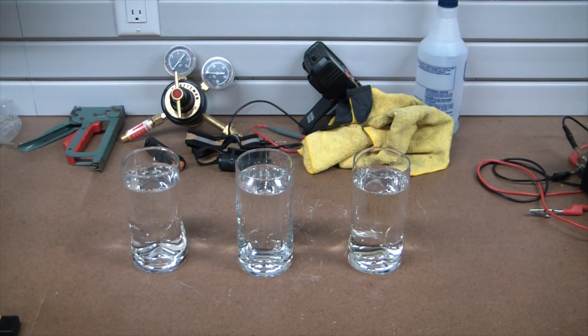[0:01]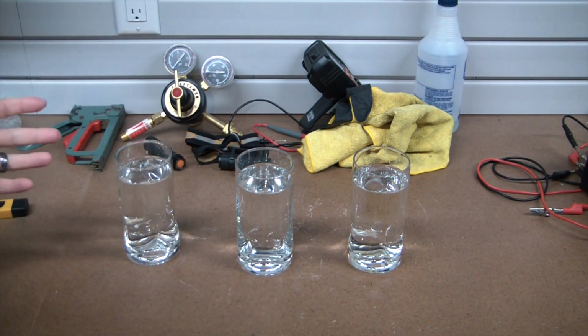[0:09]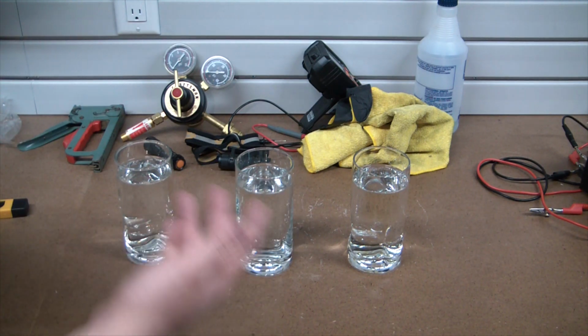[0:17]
Today, I have got water. So, I wanted to get into basically how water is treated for laboratory use, and also what I'm going to do here in my personal workshop and new house.
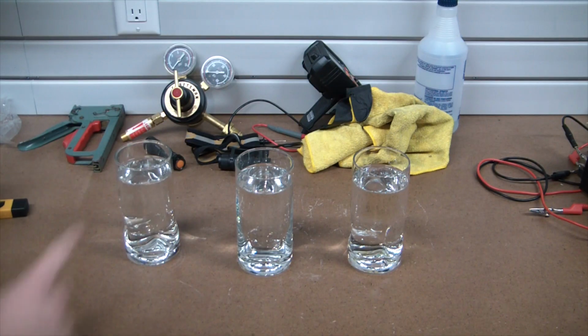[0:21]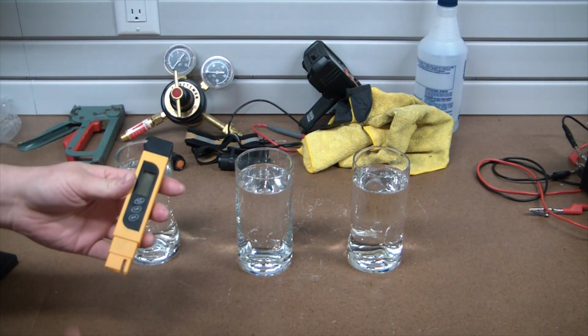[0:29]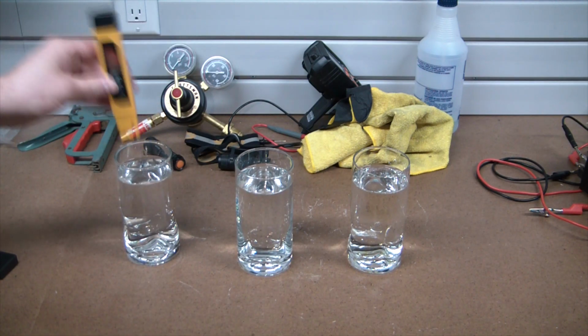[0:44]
So, what I have here is tap water right out of our tap, and this is a cheap little TDS meter off Amazon. Literally, it's an ohm meter, so it measures the resistance of water. If we look at this, it says 0 ppm. Put it in the water: 421, which is still below the EPA's recommended threshold. I think it's around 500. Below 500 is considered safe to drink.
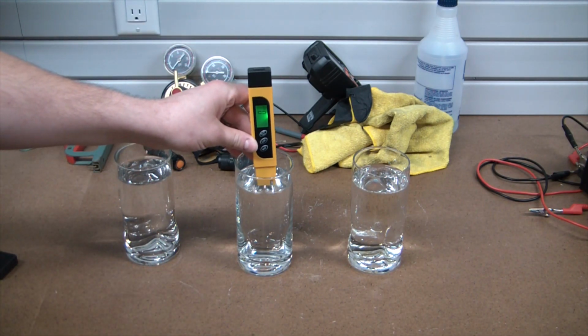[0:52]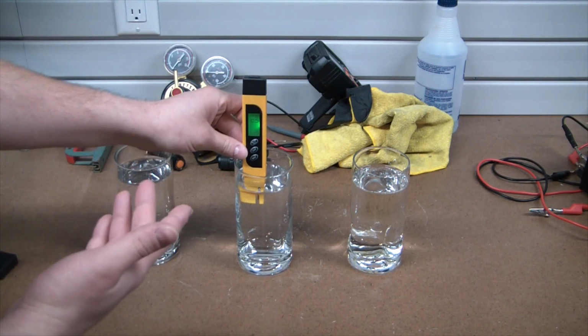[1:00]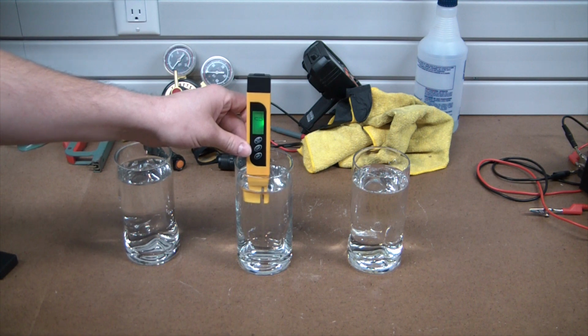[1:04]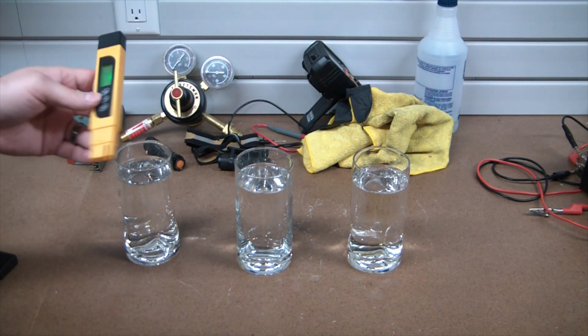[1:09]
Now here, I have distilled water. Should be pretty close to zero, if not zero. Yeah, that's not even picking up. So, I mean, this TDS meter, take it with a grain of salt. I'm sure there is some TDS in there, because even off the shelf, distilled water isn't going to be completely pure.
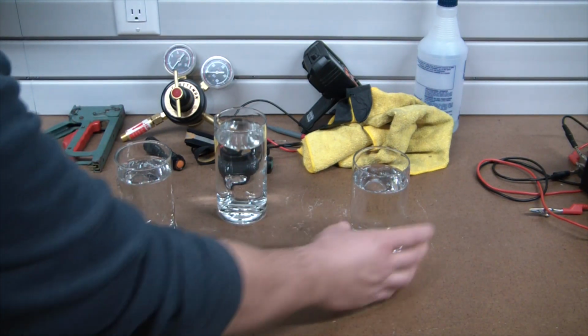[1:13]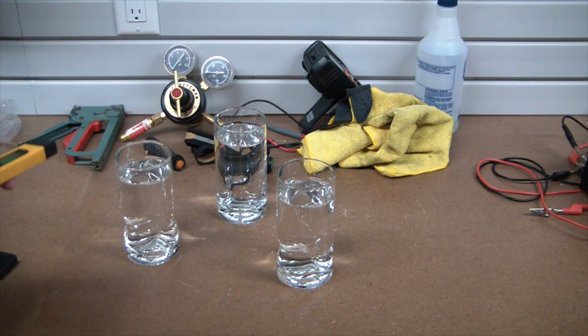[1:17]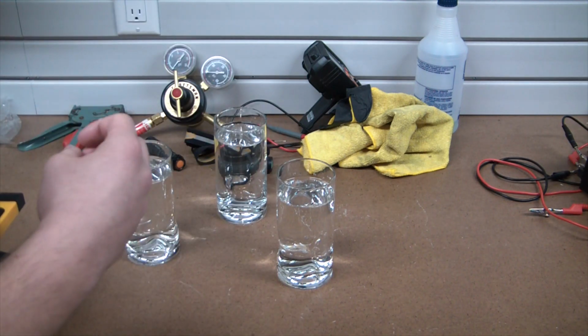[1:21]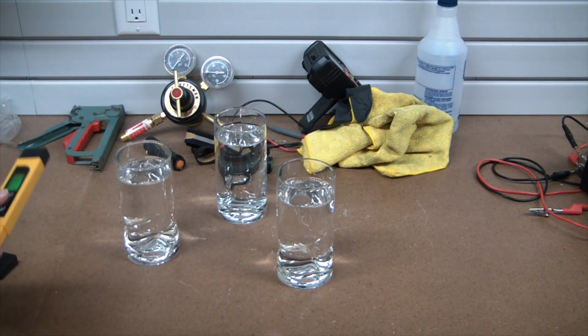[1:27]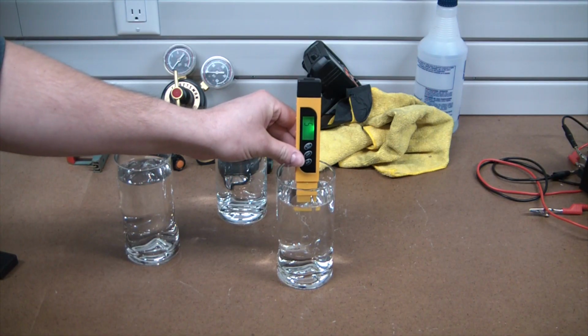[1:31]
And now here is what's called reverse osmosis water. It uses literally the reverse of osmosis. It uses water pressure to force water through a membrane, leaving the saltier liquid behind, which it then rejects and just disposes of in the sewer. And this should be maybe 30 or so. Oh, 5. So, yeah, that's pretty damn good.
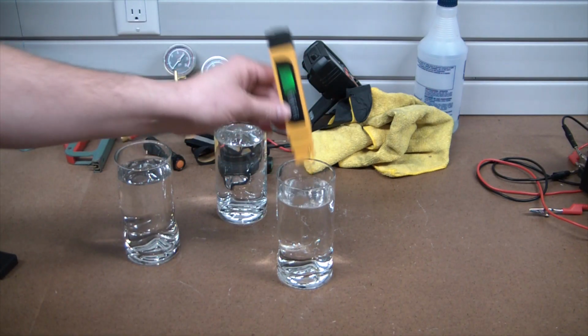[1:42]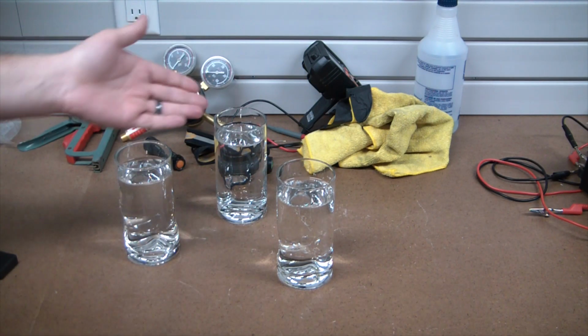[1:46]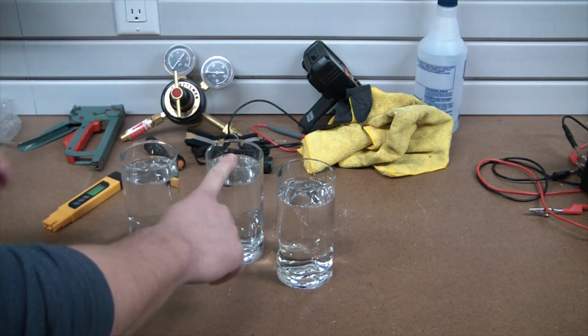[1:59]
Now, I don't yet have an RO system here in my house, but that's actually what I'm going to be putting in. From the RO system, I'm then going to be doing deionization, which will bring it to a state of purity that's above that of typical distilled water. So our goal: take this water coming in at 420 TDS, or PPM, and bring it down to a state where it is essentially zero.
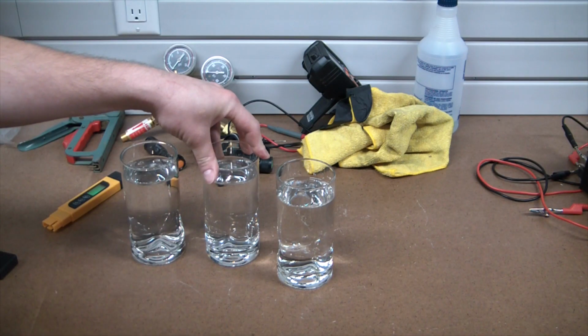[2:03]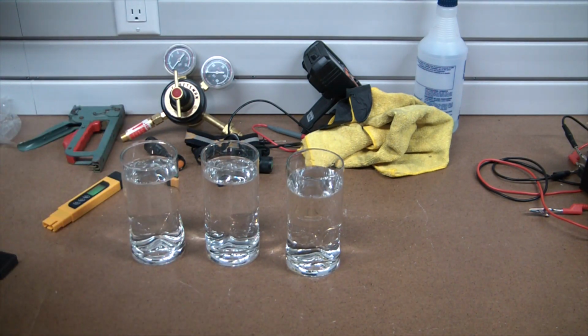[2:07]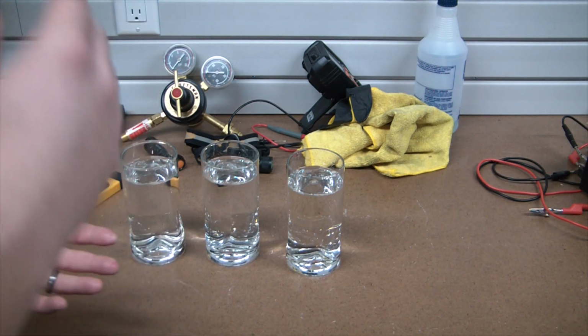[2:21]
Now, what I'm going to do is actually branch off the RO system. We're going to send some up to the kitchen for making coffee and tea and whatnot. That's going to be just straight reverse osmosis, so it might have between 10 and 30 parts per million. And then I'm going to put a branch off for use down here in the lab. That is going to be deionized.
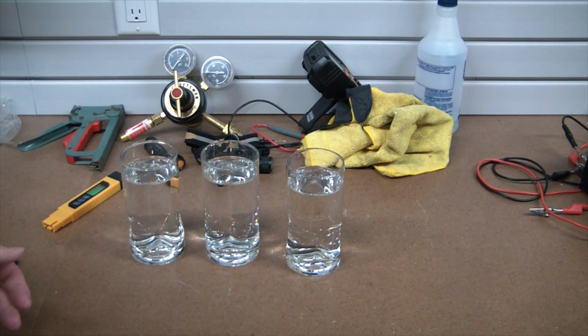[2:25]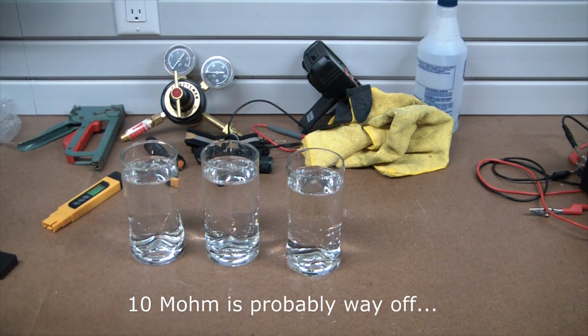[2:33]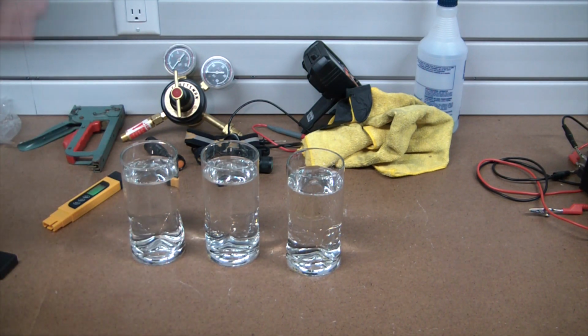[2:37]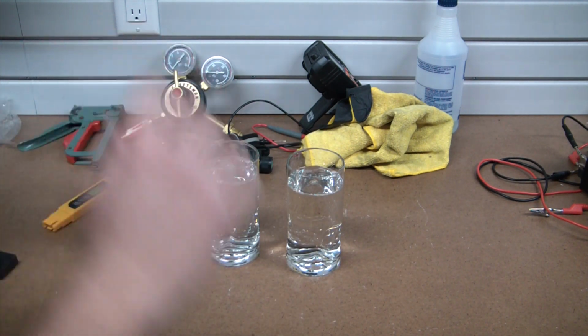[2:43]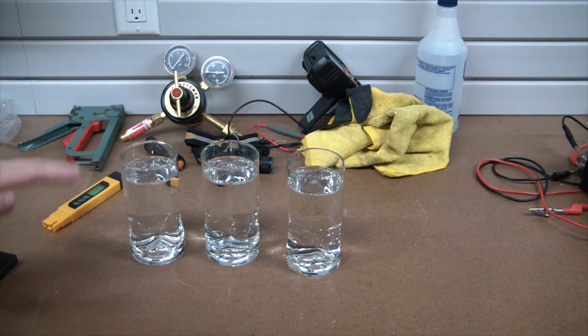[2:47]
It's going to run through an inline deionization filter with a nuclear grade resin that's going to take the water down to like, I don't know, 10 megohms or something. But it's going to be ultra pure, zero parts per million, zero TDS. You could literally spray it on your car, let the water evaporate, and you wouldn't get water spots because there are no minerals dissolved in the water at all. That's the goal here. Let me show you my current setup.
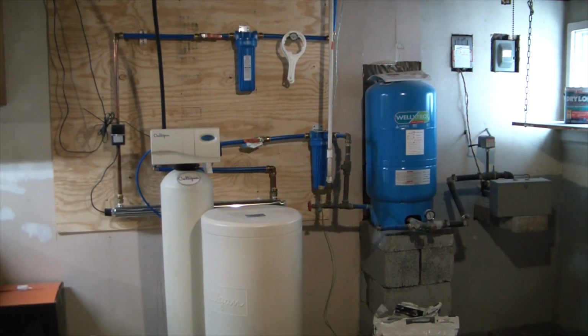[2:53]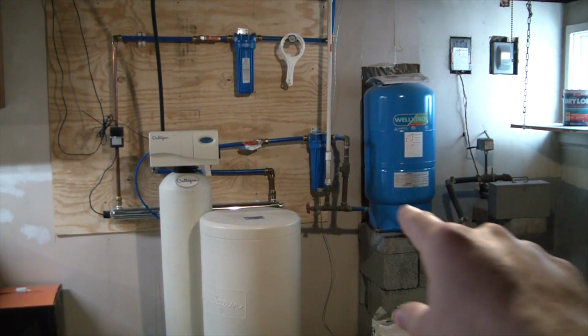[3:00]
All right, so this is my current water system, and this part here actually isn't going to change. I just want to show you what's going on. Over here, we have the well input, or I guess output. This is water coming from our well pump. We're not on city water, so no chlorine or anything to deal with. It's coming in from the well, 150 feet below ground. There's a little pressure switch there that clicks the pump on and off depending on the pressure.
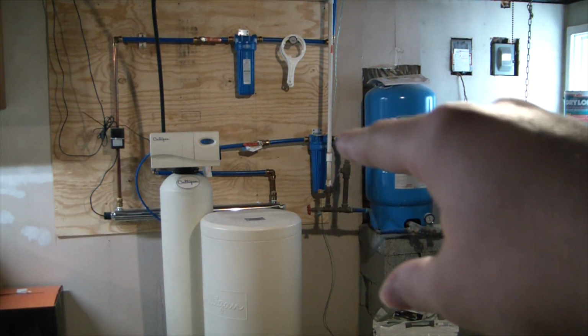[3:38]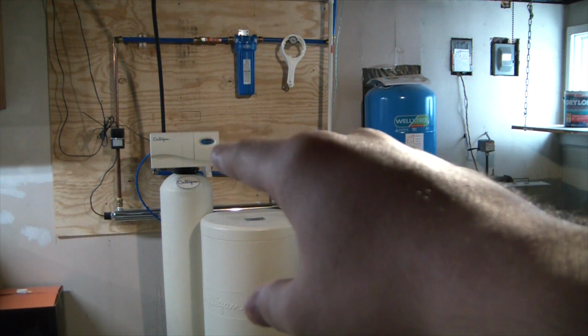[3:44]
There's our bladder tank. It's basically a pressurized membrane. It keeps the water pressure relatively equalized and allows the pump to work less because it can store water up here under pressure. Then it outputs to my first filter there, which is a 5 micron sediment filter. From the 5 micron filter it goes right to the softener.
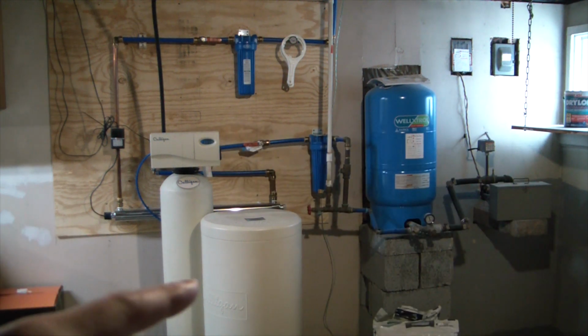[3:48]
The softener is actually an ion exchange resin that takes the dissolved calcium and magnesium minerals, along with some others, in the water and exchanges them with sodium. Over here is the actual resin tank, and there is a salt tank, a brine tank. Every so often it has to regenerate itself with sodium chloride, extracting brine from that tank and pumping it through, and then you're good to remove a bunch of calcium and magnesium again.
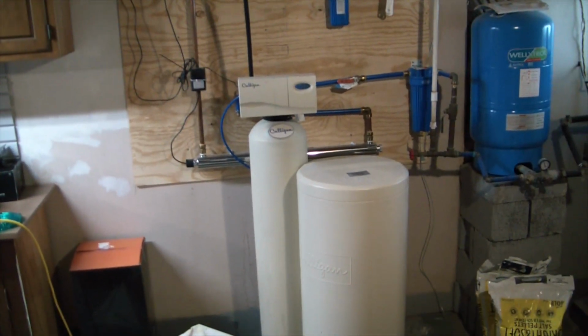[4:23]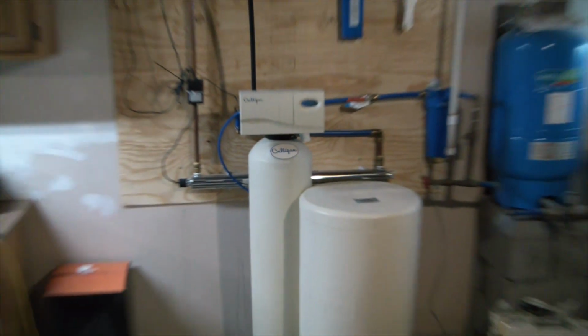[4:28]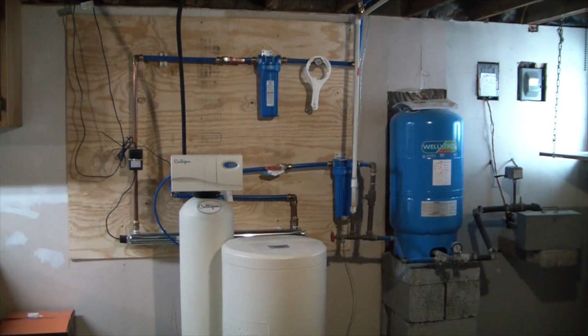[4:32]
From the softener, it goes to this big stainless steel apparatus that's tucked behind it there. It is a massive UV sterilizer, 55 watts of ultraviolet power. We did have the well tested originally, and it did have some kind of coliform bacteria in there. It's not E. coli, but some sort of coliform.
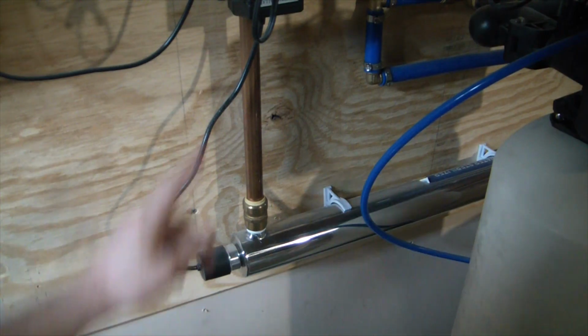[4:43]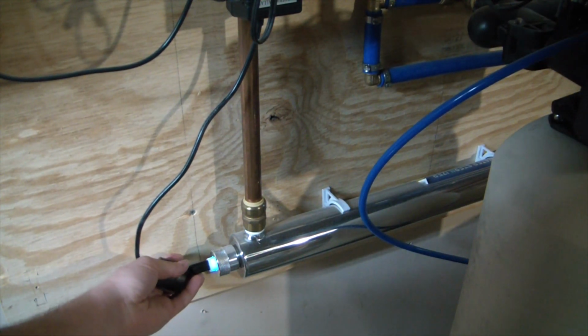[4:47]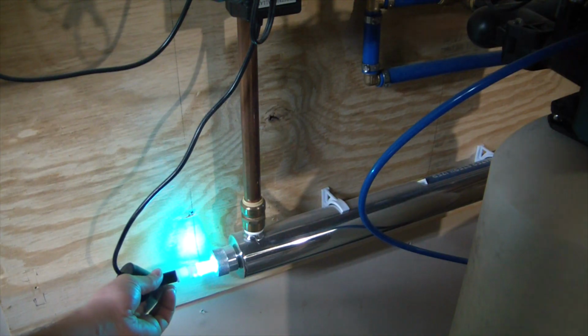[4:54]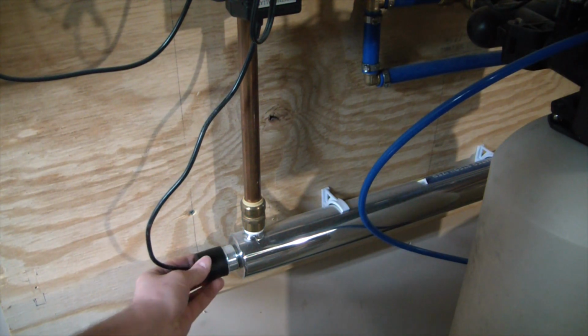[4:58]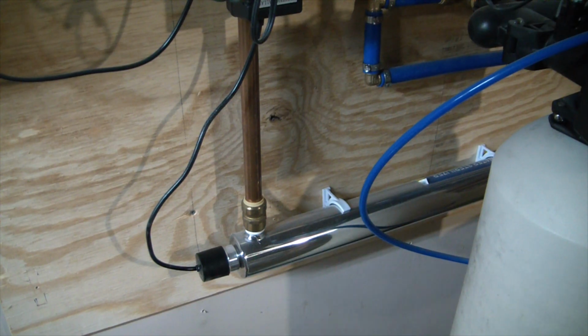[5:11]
So let me show you. Here's the end of the UV sterilizer. This is where the bulb actually goes in, so you can see. I'm not going to look directly at it, but the whole tube is filled with massive UV light. That destroys the DNA or RNA of bacteria, viruses, all that sort of stuff going through the sterilizer. I think it handles up to like 12 gallons per minute, so really high flow rate. Nothing can multiply after going through there if it does survive.
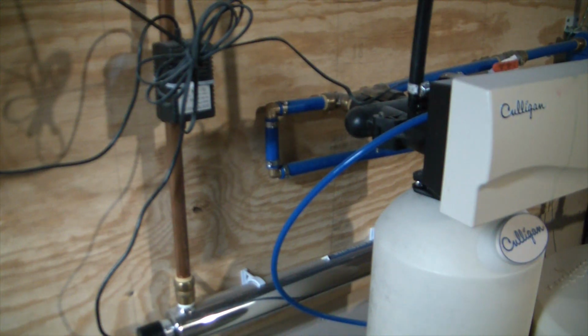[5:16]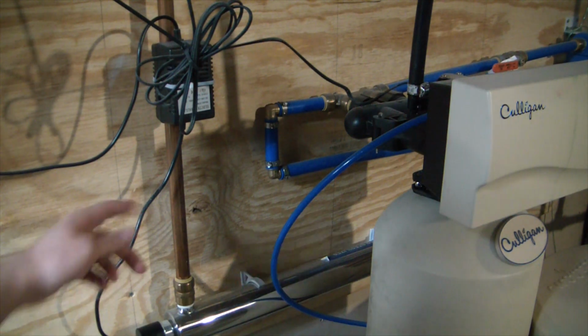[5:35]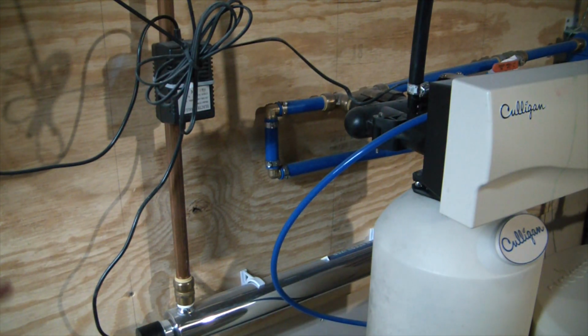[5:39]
Another important thing to note here, you can see most of my system is comprised of PEX. I love PEX. Super easy to work with. Get the crimps, SharkBites, whatever you want. Super, super easy. But you can see I did not use PEX for the connections to the UV sterilizer, and that's because that super intense ultraviolet light will destroy the inlet and outlet areas if it is plastic. So instead I use copper there. Copper isn't going to get hurt by huge intense UV radiation.
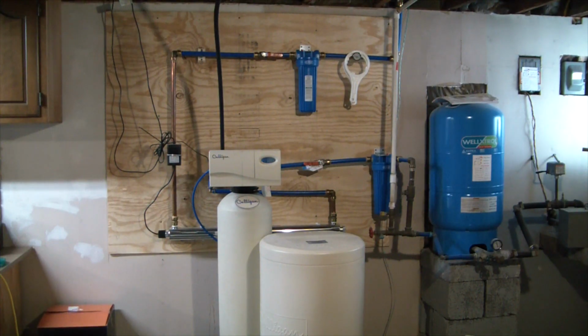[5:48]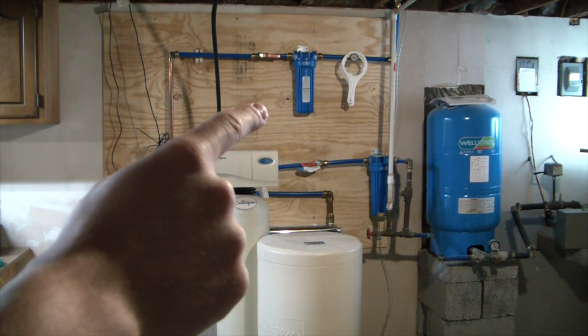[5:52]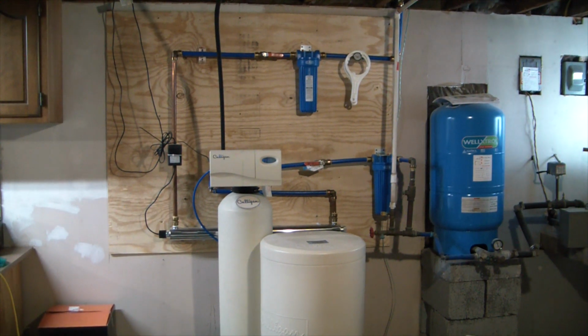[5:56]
So then finally up at the top there, I have a carbon filter. So that's a block carbon cartridge. But what we have coming out is reasonably pure, good tasting water. Obviously it does have quite a bit of dissolved minerals, but what I want to do is take this water that's coming out at 420 parts per million and bring it down to 10-30 for kitchen use and zero for lab use.
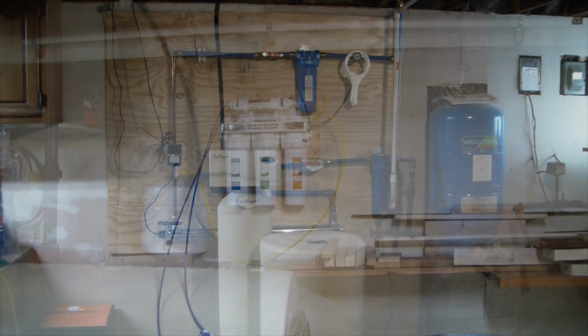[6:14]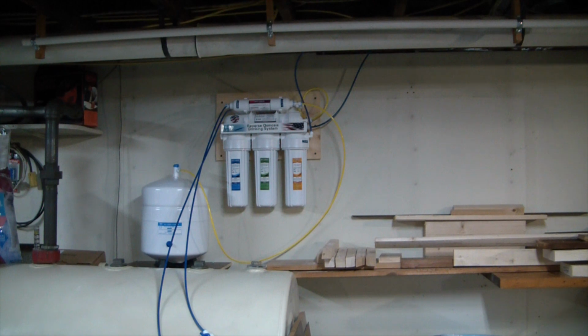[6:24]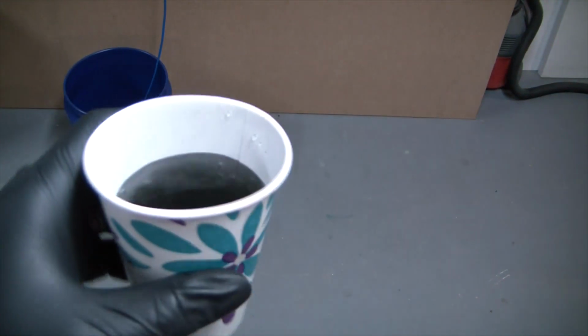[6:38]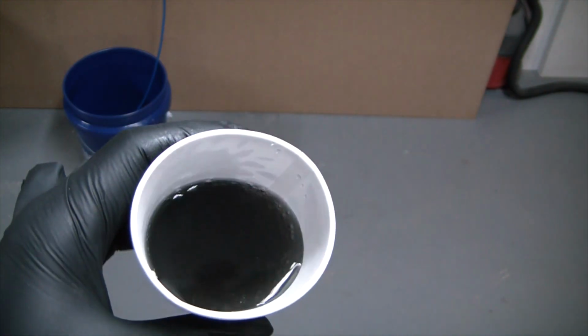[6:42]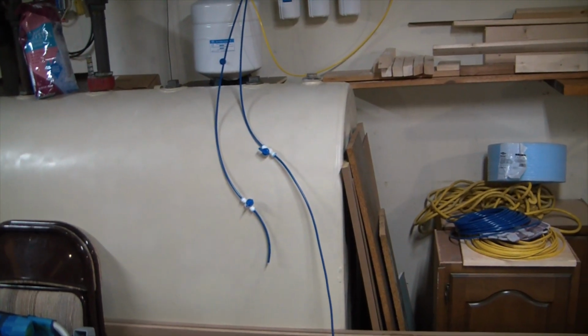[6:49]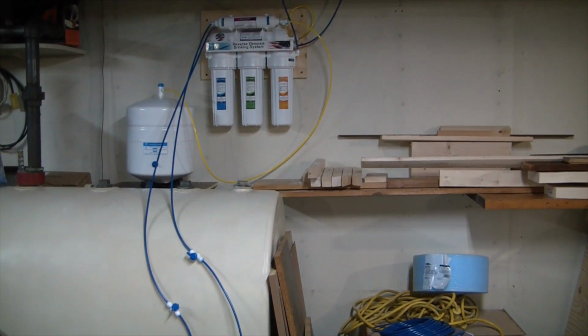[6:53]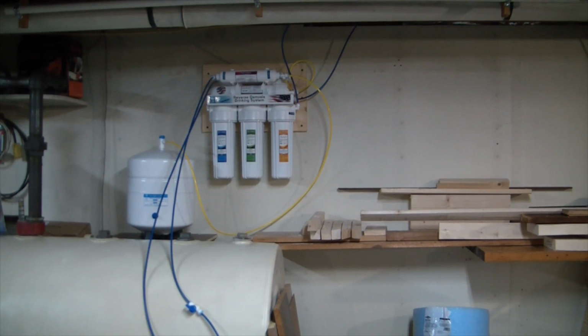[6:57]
All right guys, so I just got the RO system installed and I gotta say my favorite part about it is how it has American flags all over it despite being made completely in China. It's a sad state of affairs there. But anyway, just gave her the initial fire up and you can see the first bit of water coming out of it, which I got here. Tons of carbon sediment, so that's coming out of the filters. So it tells you to run it for 10 minutes. So I actually have that valve there. You can see I have it mounted right on top of my dino juice tank. But got that valve open, letting it run for about 10 minutes or so.
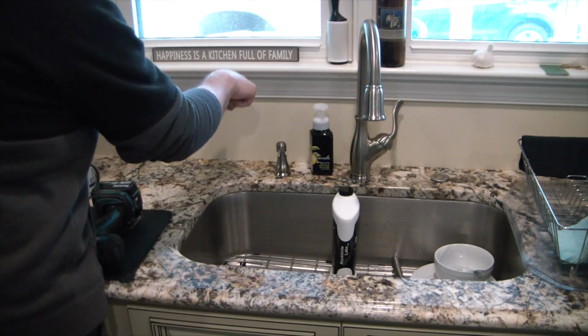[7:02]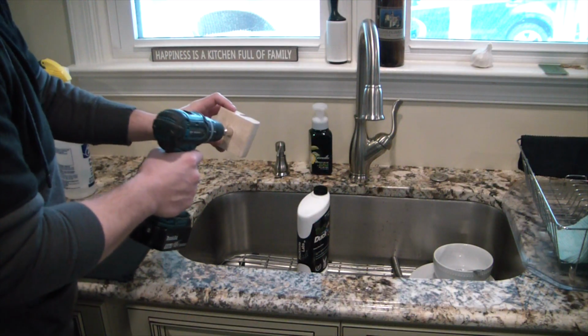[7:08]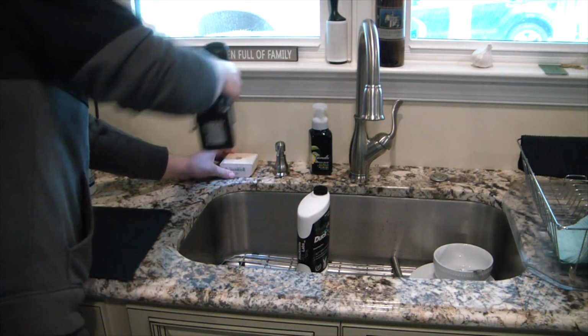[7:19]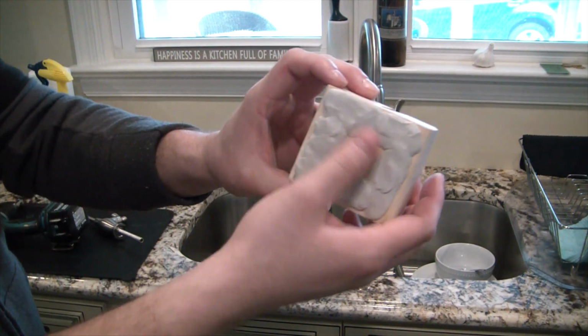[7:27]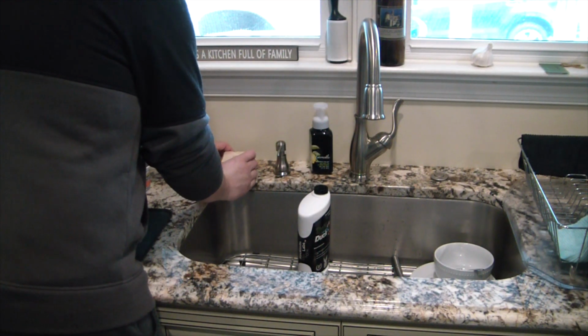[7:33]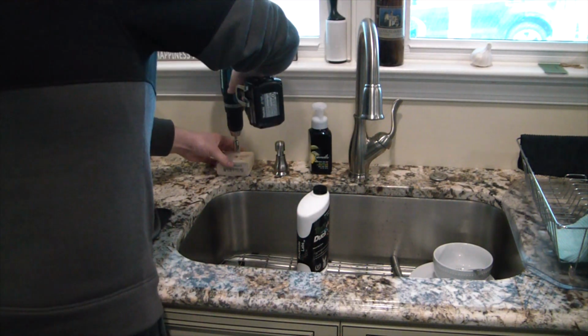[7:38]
All right, so here we are in the kitchen. The wife wants the RO spigot about here. So I just got a little template block to keep the drill bit in place for the initial bit of hole. Because, you know, you can't really start a hole with a bit like this. So this will keep it. I'll put some plumber's putty on the bottom, stick it, and then that'll let me start the hole. So you got the bottom of the block, just got some plumber's putty on there, so one, that'll adhere it, and two, that'll keep it from spilling water. Squirt some water in there, and start the drilling process.
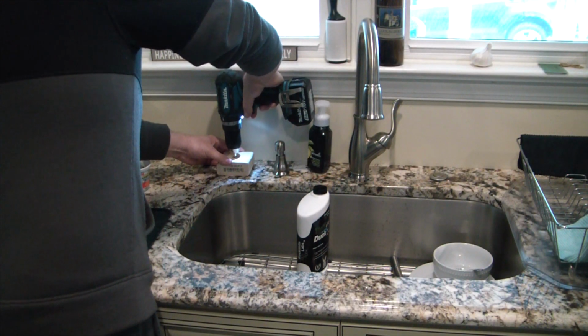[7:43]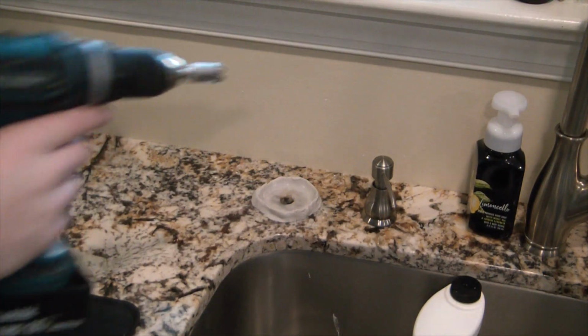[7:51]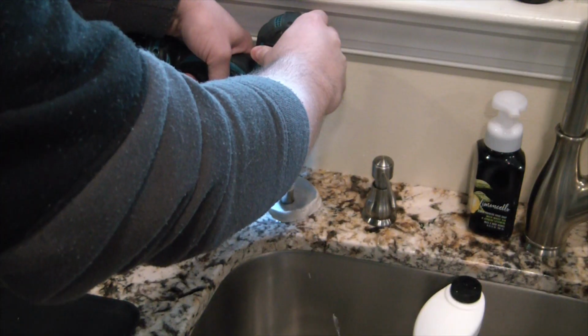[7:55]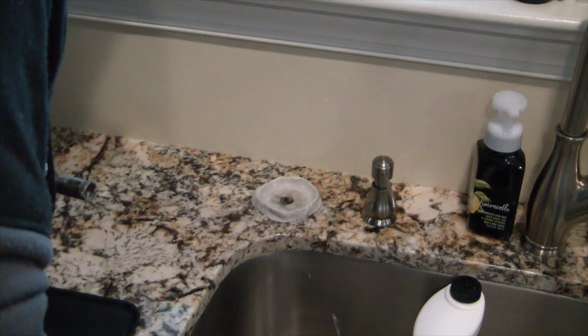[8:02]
Oh, I'm a little late to record, but just broke through. So I'm just gonna take the final bit of cut here. Oh, yeah. What a beautiful hole.
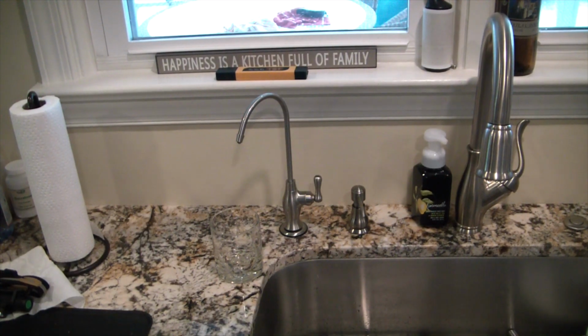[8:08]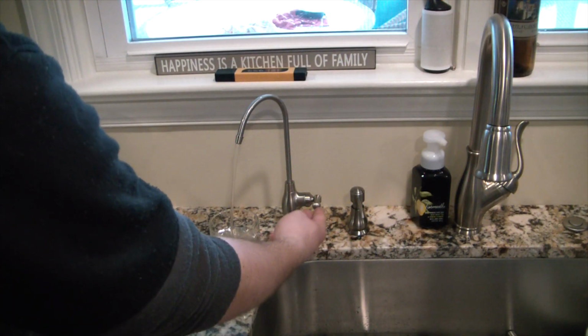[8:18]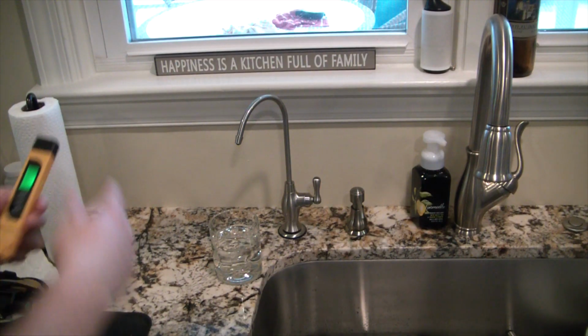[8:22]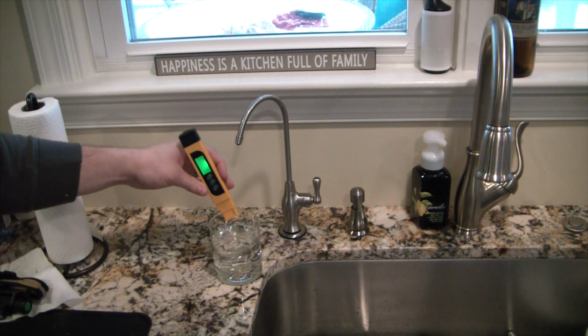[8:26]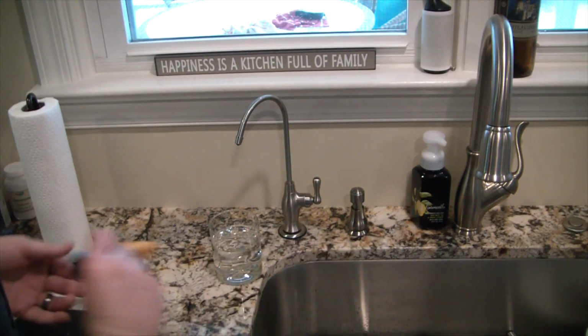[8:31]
All right, so I just wrapped up the bottom end connections. Let it flush for a couple minutes just to get any contaminants out of the line. So we'll see what kind of TDS we're getting up here. I did another flush of the RO system, so I'm hoping it's a little more pure. 16 parts per million, not too bad.
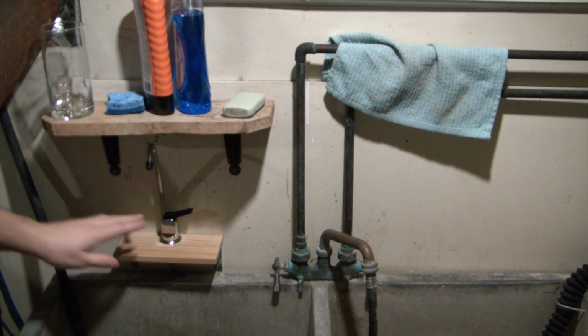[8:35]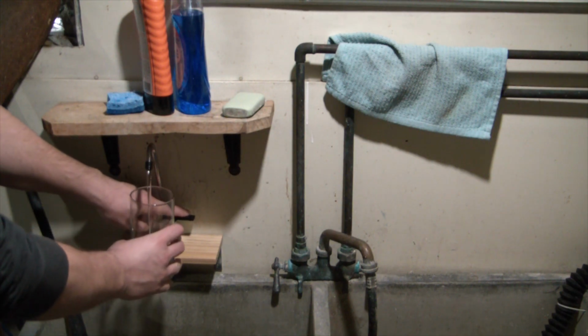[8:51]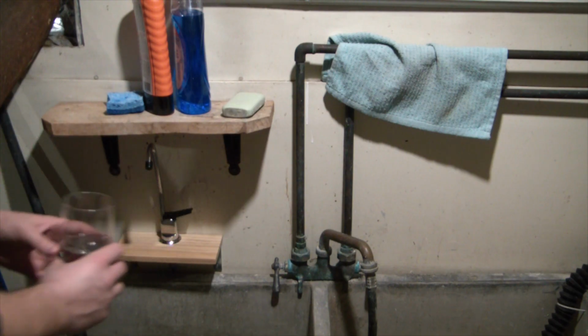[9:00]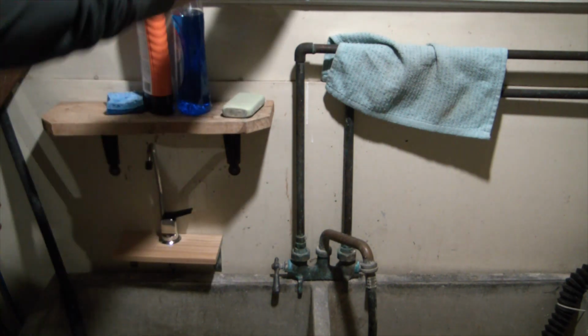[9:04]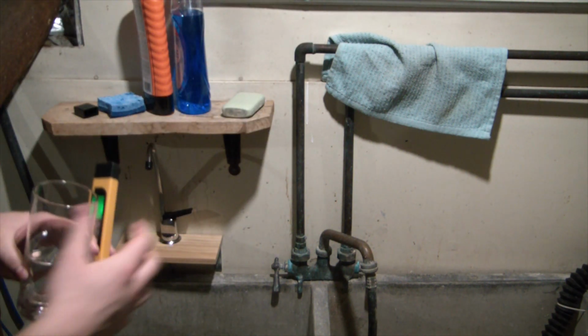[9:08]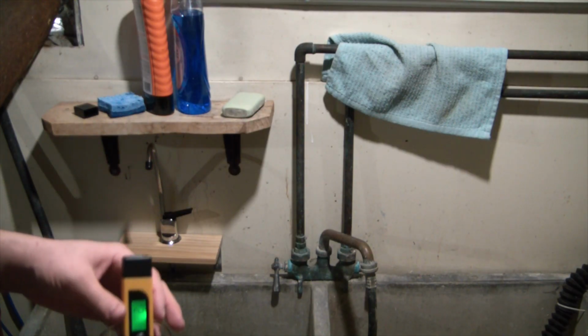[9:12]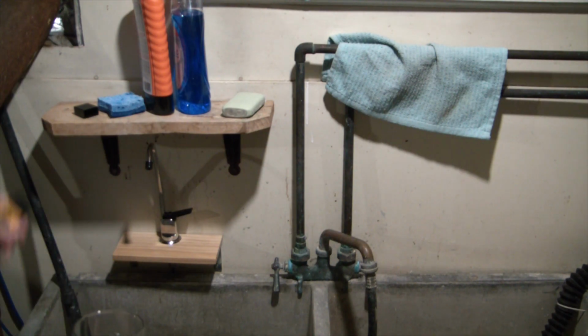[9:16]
All right, so got the RO hooked up upstairs and just set this little shelf up. Despite this looking out of plumb on the frame, everything else is not quite even. Former owner of the house wasn't too fond of doing things right. But here's the DI water, and I've already tested it. Little disappointed. I'm not sure if ions are getting in from the faucet or if the cartridge just isn't doing a very good job. But it looks like two parts per million, so not quite zero.
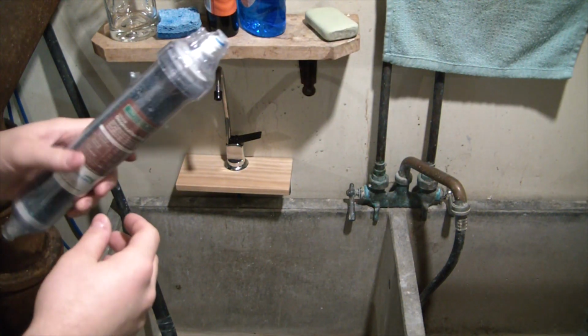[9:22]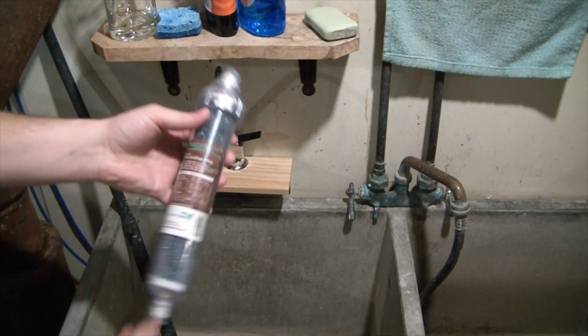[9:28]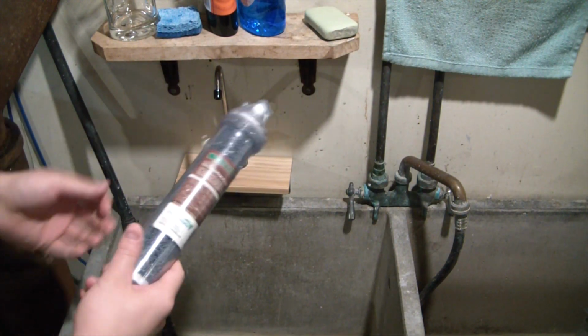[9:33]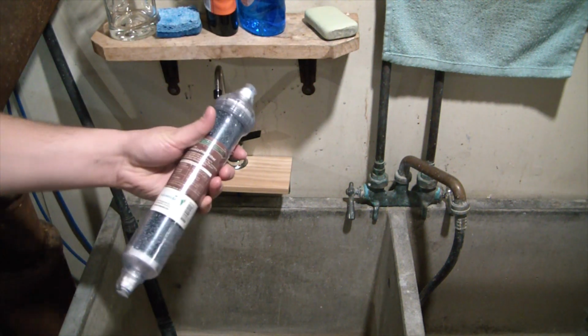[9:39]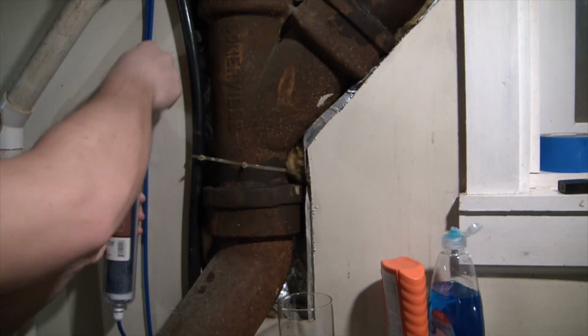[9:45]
So seeing as we're still getting some TDS in the water, what I thought I'd do is add another inline deionization bed. So that way the small remaining amount of TDS, you know, one or two parts per million, will get picked up by this. And they claim this thing's good for like 400 gallons. So should get quite a bit of deionized water. All right, there we go. DI filter in place. I'll 3D print a bracket or make something out of wood just to go up there and hold it nice and in place. That's pretty sweet though.
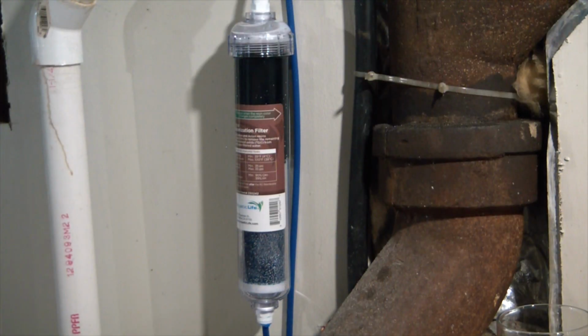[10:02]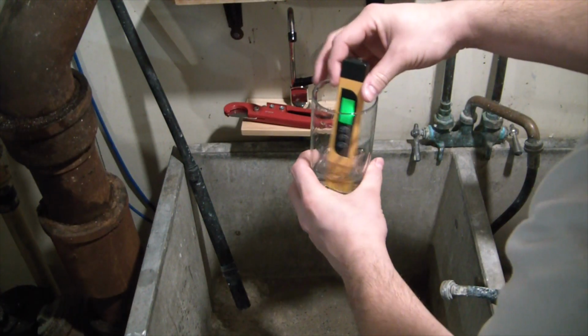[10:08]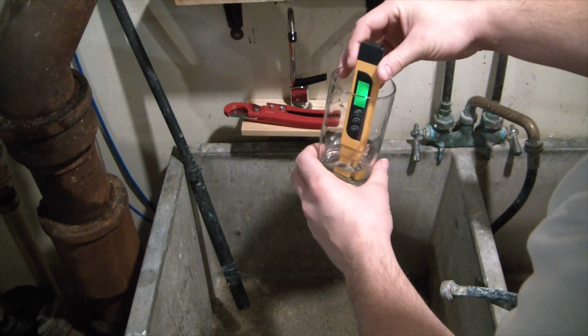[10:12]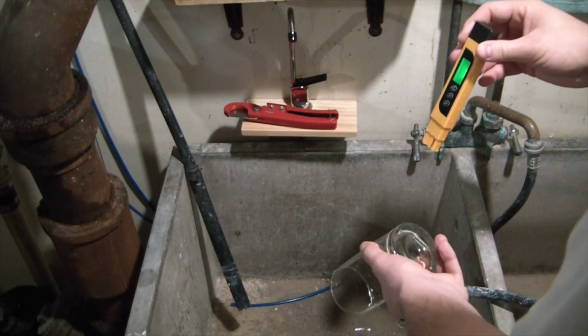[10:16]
Woo! Nice! We are at zero. Total and utter zero. We have got some super pure water, guys. That's a lot of work just to have clean glassware.
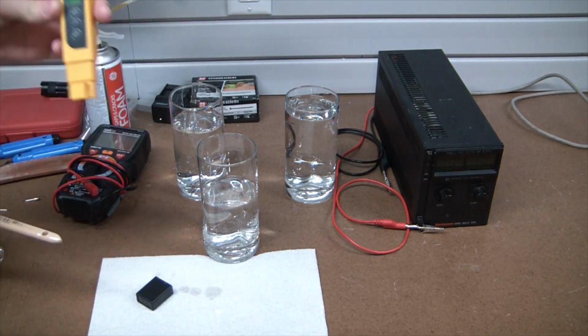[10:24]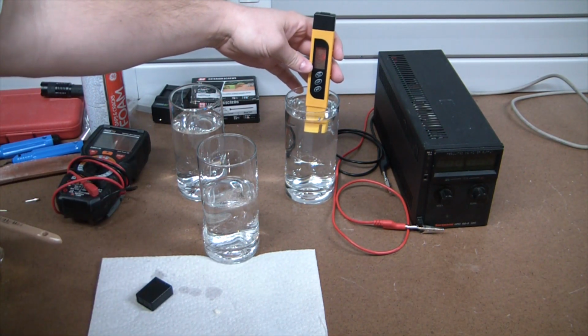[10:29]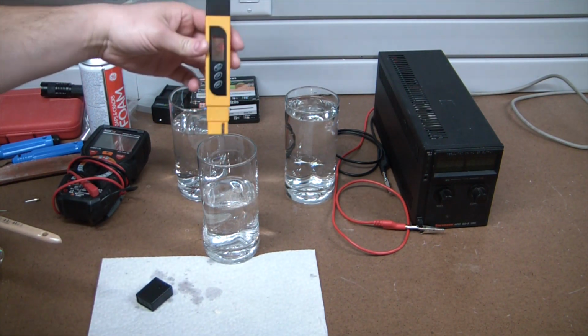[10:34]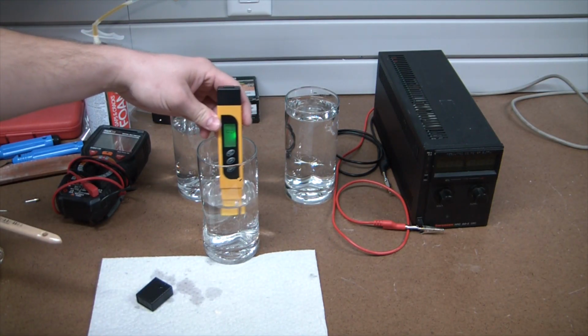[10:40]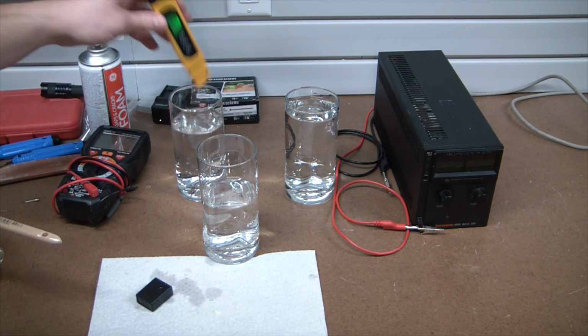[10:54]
All right guys, so we have taken our crappy tap water over a whopping 400 parts per million, down to, let me clear it. I might have just contaminated it, but this is our DI water at zero. Pretty freaking awesome. And just for reference, this is the RO water rather, coming out at 9. So a very, very effective method of taking the TDS out of water.
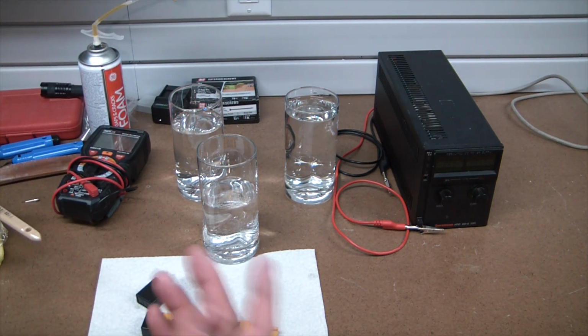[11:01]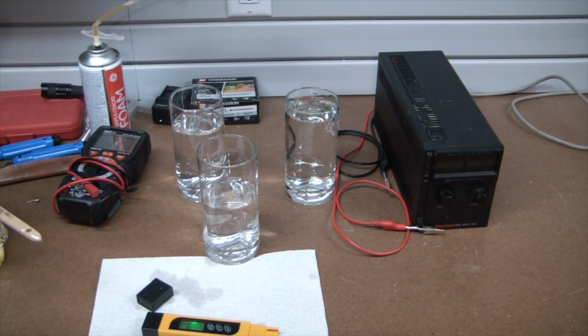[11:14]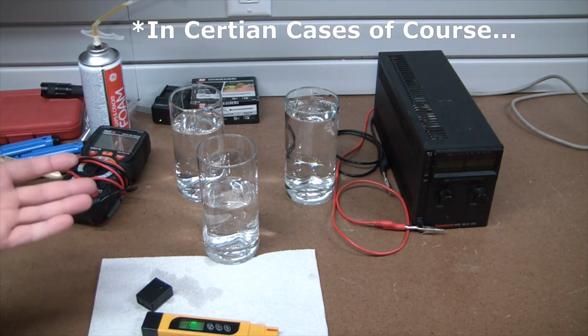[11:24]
All right, guys, thank you so much for watching. I know this wasn't the usual climactic sort of explosive and or whooshy ending we usually have. But nonetheless, pretty freaking cool that we have utterly pure water available anytime. So, you know, certain reactions need very high purity levels of water. I mean, hell, you can even rinse electronics off with this stuff and not harm it.